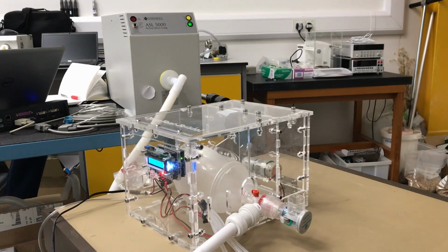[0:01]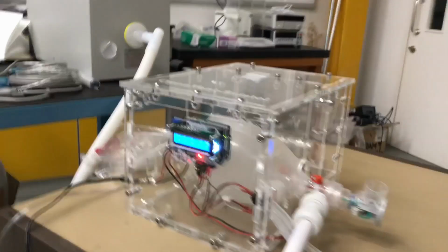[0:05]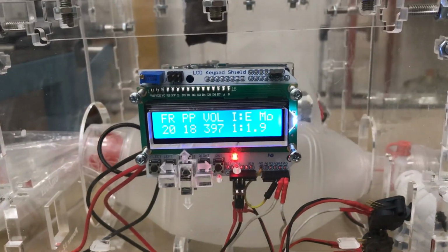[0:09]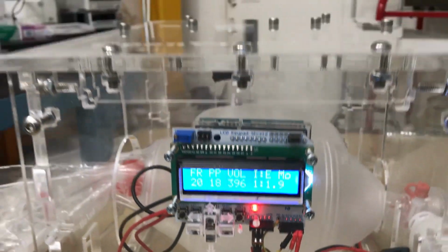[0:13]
Hi everyone, this video shows the testing of our device at the National Physical Laboratory in London under volume control ventilation mode, and you can see on the screen that we're delivering a pretty repeatable volume of 400 milliliters per breath, which is really good.
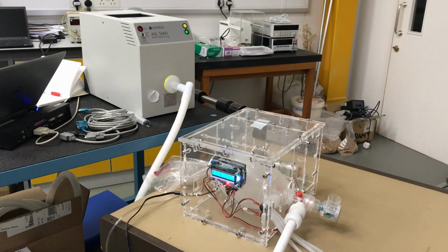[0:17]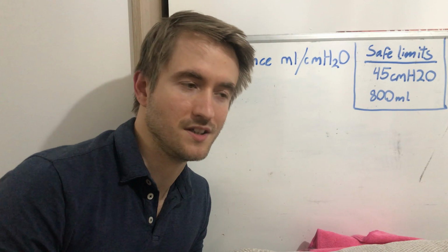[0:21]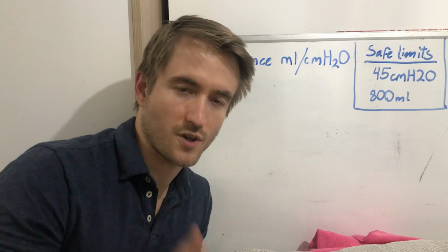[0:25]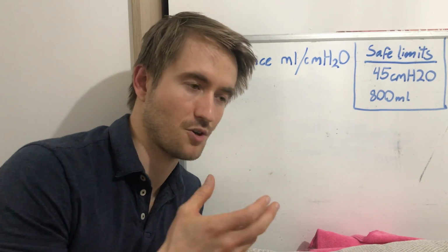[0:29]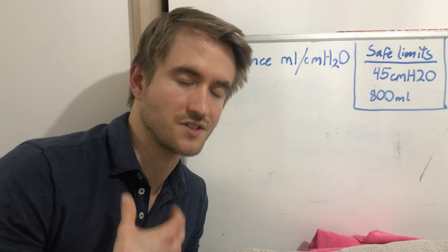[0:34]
We tested under different test conditions using their test lung as per the test table in the MHRA requirements. So the way the test lung works is you vary the compliance and resistance of the test lung to try to replicate the lung conditions of somebody suffering with COVID.
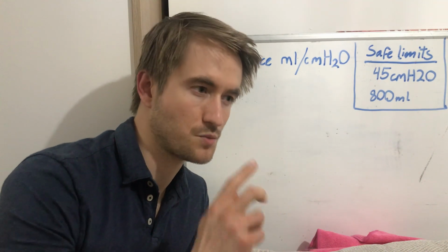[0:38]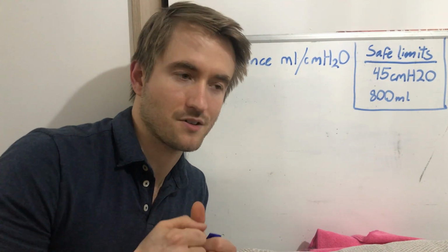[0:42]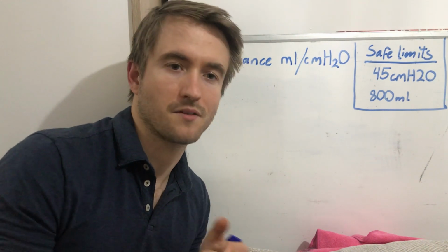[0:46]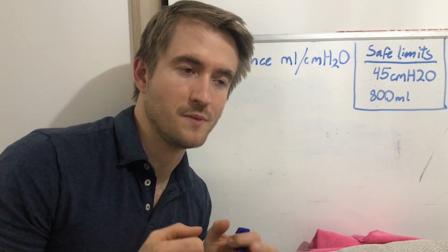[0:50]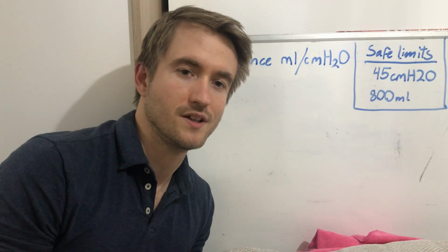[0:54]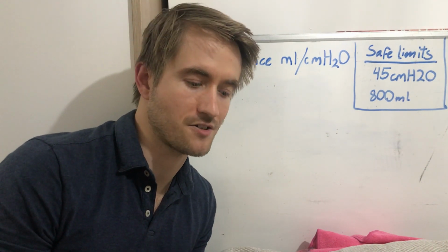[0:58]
So those two factors, one is compliance, which means the amount that the lungs can expand and contract. So a higher compliance value means they can expand and contract more. A lower compliance value means they really struggle to expand and contract. And the resistance value is how difficult or how easy it is for that expansion and contraction to happen.
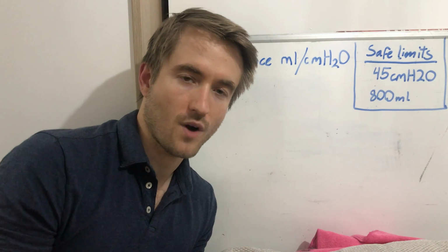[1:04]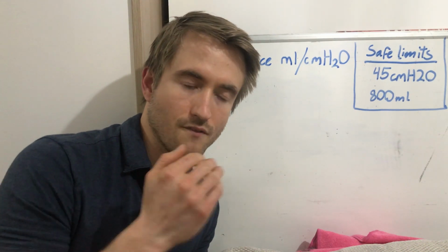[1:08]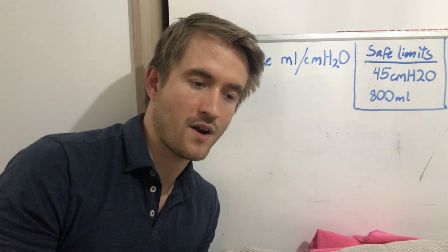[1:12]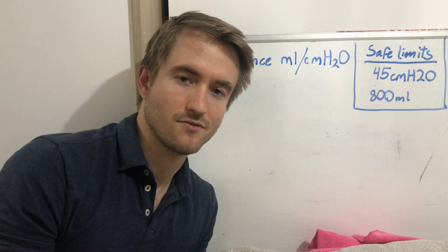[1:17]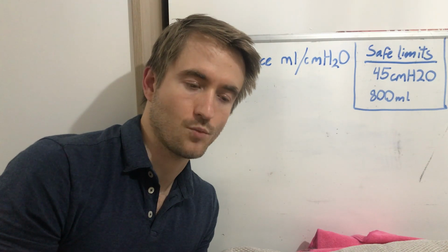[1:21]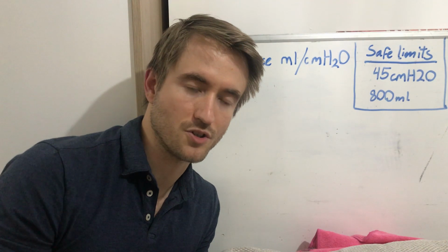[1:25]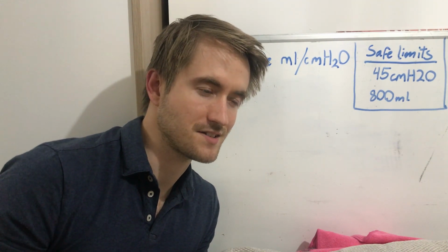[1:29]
As I was saying, our ventilator performs pretty well most of the time and delivered a consistent volume during the volume control ventilation mode. However, when we went to the further extremes of the compliance and the resistance values, it struggled and it wasn't able to perform as the test standard would show, but that's not necessarily a bad thing, and I'll explain.
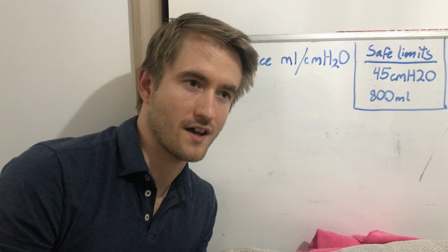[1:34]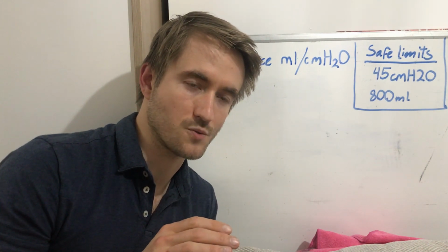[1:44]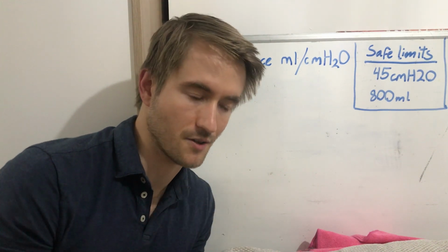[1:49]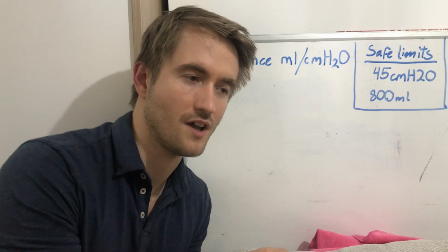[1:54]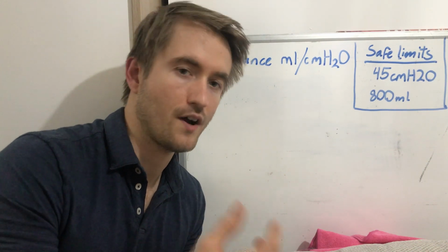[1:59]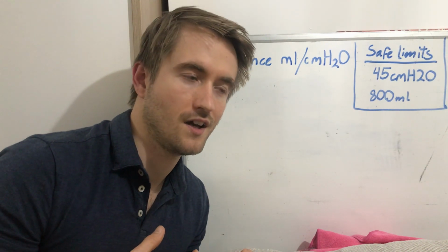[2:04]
So under those more extreme levels where the compliance is very low and the resistance is very high, as per the numbers in the table on the requirements document, if there was a ventilator which would successfully run those tests under those further extremes, it would actually produce an unsafe pressure level in order to do that. So they're asking for a volume of 500 milliliters of breath to be achieved with quite a low lung compliance, which means a very high pressure.
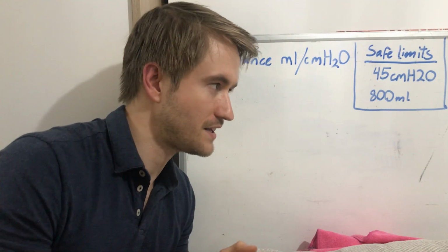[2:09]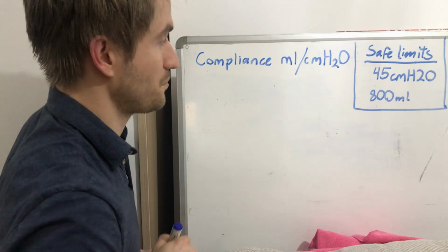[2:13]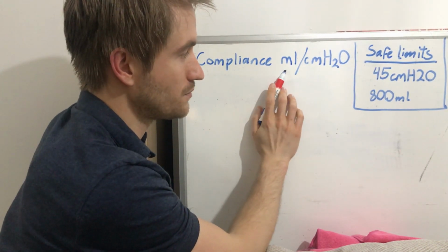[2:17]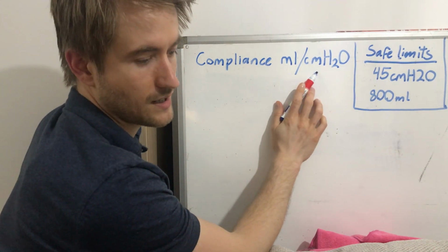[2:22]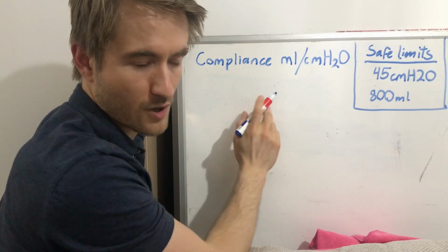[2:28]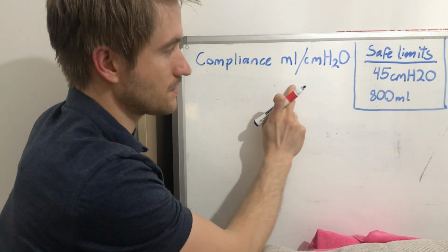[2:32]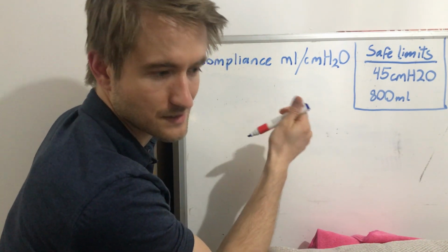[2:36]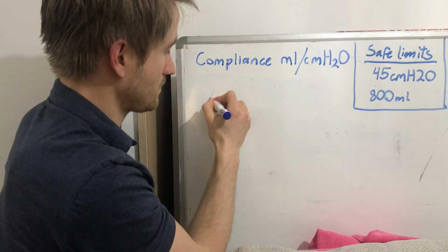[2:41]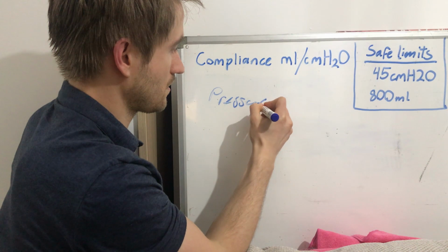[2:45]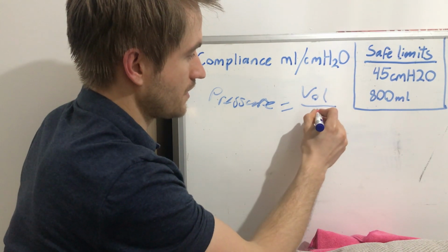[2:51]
So to try and explain that in a really simple way, although still with an equation, so sorry about that, the compliance is volume divided by pressure, so milliliters divided by centimeters of H2O. So if we rearrange that equation and try and work out what pressure you would need to achieve a test using 500 milliliters and a compliance of 10, rearrange that equation. So that's pressure is equal to the volume divided by C for compliance.
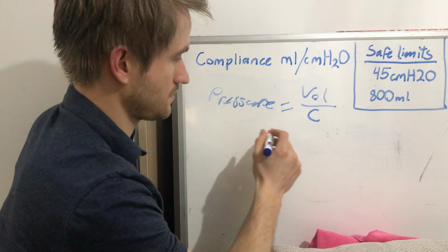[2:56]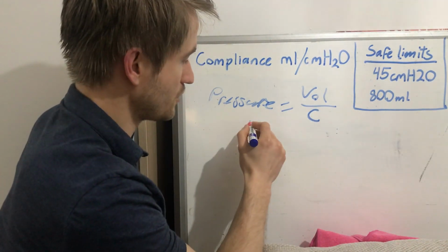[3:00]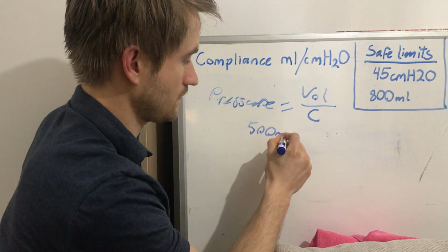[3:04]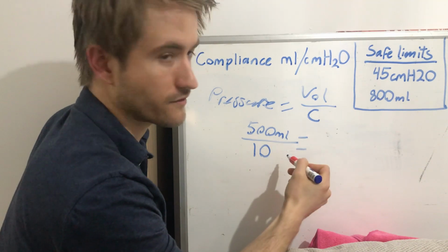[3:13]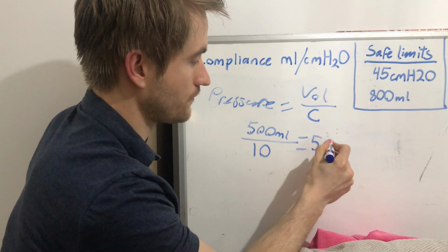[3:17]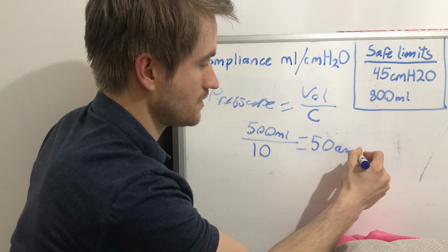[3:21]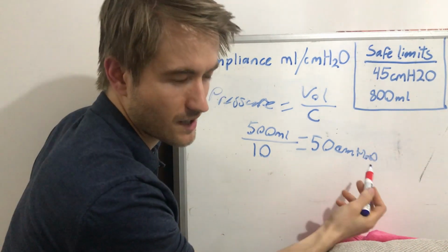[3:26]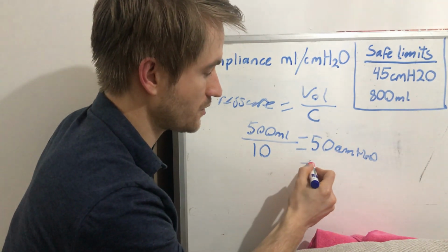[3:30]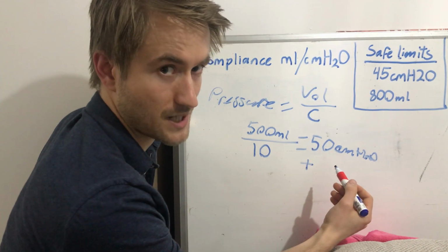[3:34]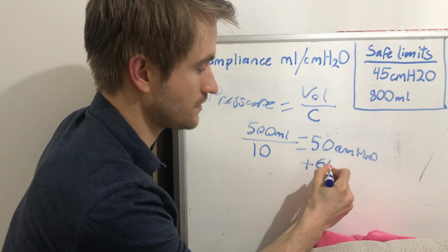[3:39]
So for us, in this extreme case on the test table, the volume was 500 milliliters, and the compliance was a value of 10. So divide one from the other. 500 divided by 10 is 50. So that's a value of 50 cm H2O. So 50 is a really high pressure value. Also remember that we have to add on to that PEEP, which in the highest instance in the table is a PEEP of 15. So that means a total pressure of 65 centimeters of H2O.
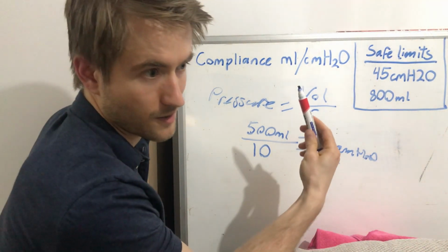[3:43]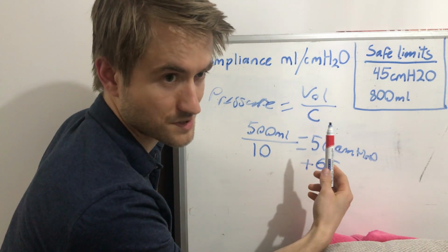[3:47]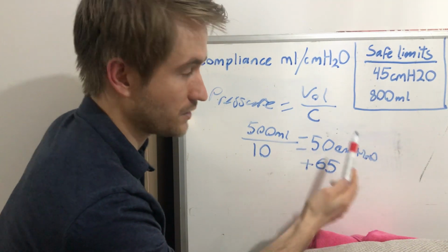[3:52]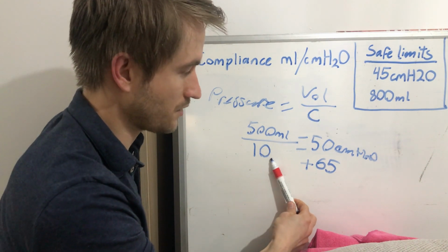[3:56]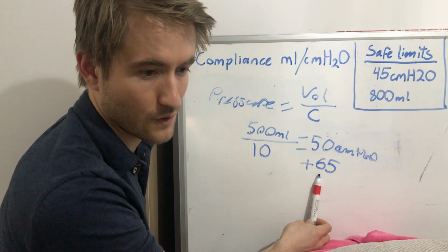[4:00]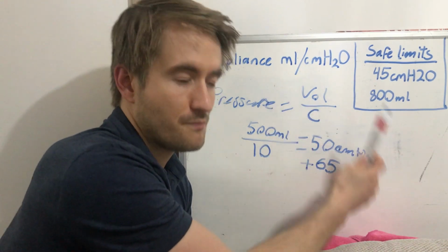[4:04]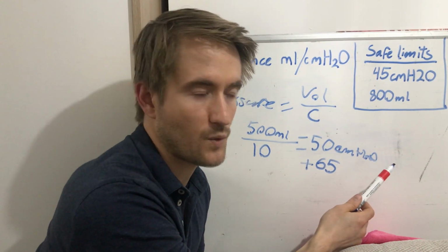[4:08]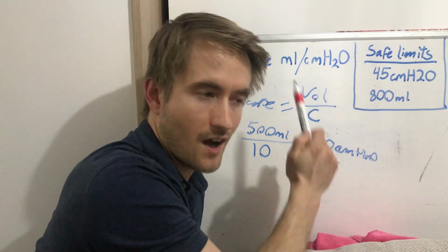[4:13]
So just to recap, if a device was to successfully meet that extreme test case, it would have to deliver 500 milliliters of volume with a lung compliance of 10, which means it would have to use a pressure of 65 centimeters of H2O. Based on the safe numbers that I've been given by the anaesthetist that we're working with, 45 centimeters of H2O is the upper safe limit.
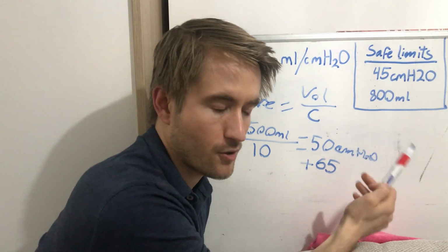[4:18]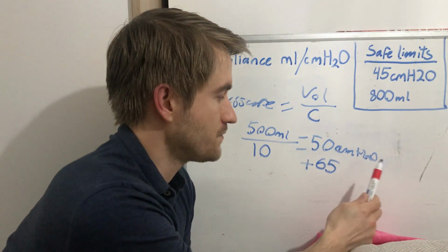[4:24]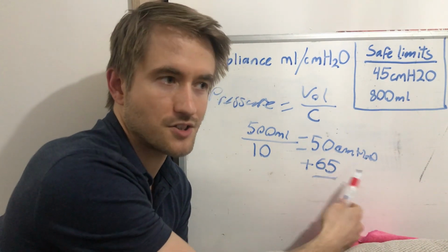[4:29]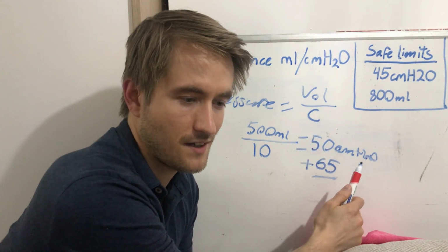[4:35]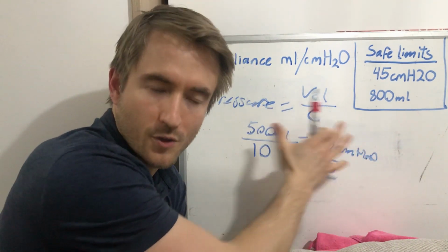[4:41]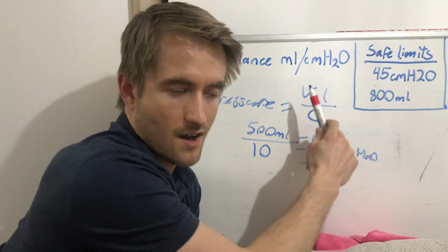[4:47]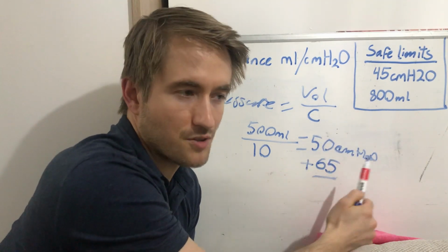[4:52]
If you go much beyond that, you could risk barotrauma, and barotrauma is a sort of damage to the lungs caused by overpressure. So 65 is a really high value of pressure, and that could certainly cause damage to the lungs. It's worth saying in the other test table, which is pressure control mode rather than volume control mode, which this is about, there is also an unsafe test state, which results in a volume of over a liter being deposited, which is over this safe limit as well.
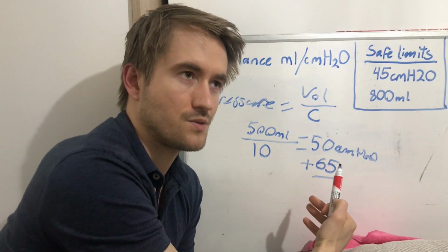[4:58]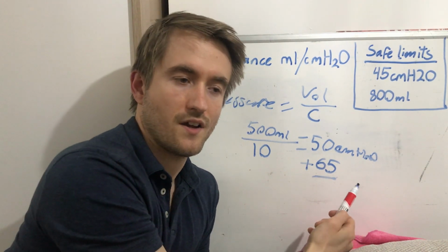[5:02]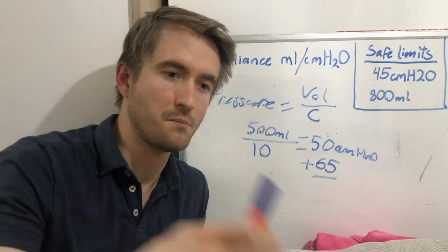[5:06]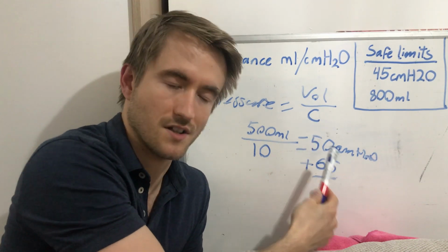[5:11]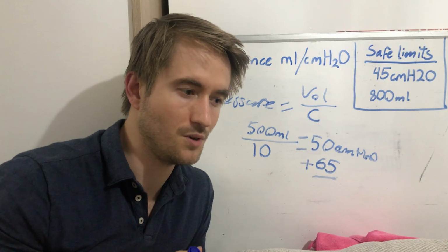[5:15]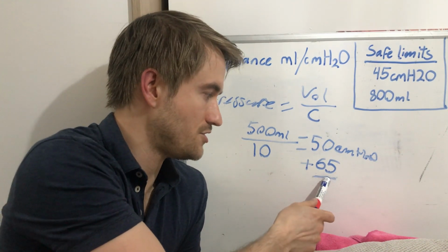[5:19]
So the question then is, where does that leave us? We're trying to design a system to meet the MHRA requirements, but one part of the requirements suggests 35 as a number that we shouldn't go over. But then if you go down into the test table, in order to satisfy those tests, you need to produce a pressure that's really high.
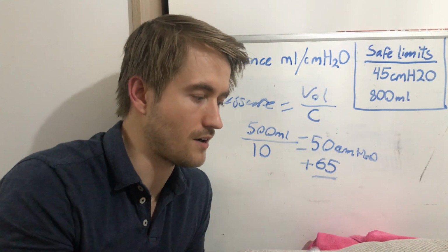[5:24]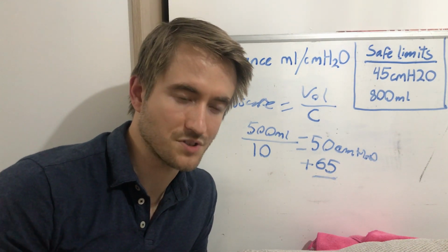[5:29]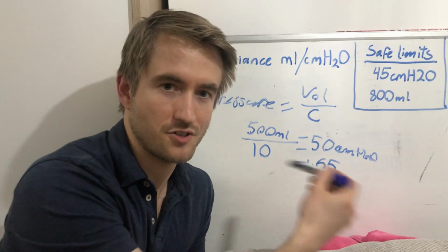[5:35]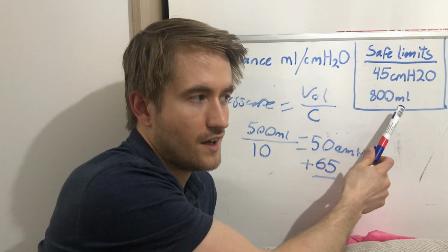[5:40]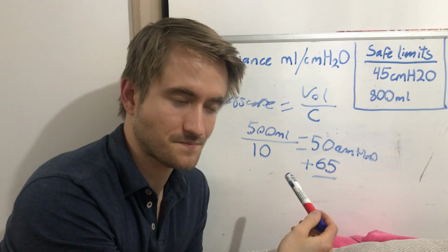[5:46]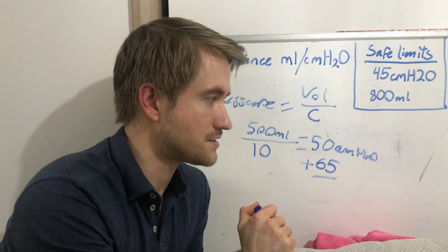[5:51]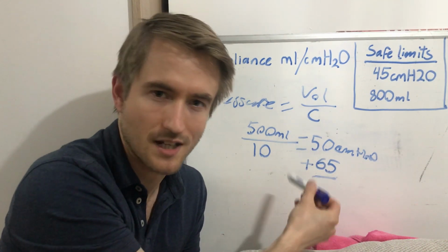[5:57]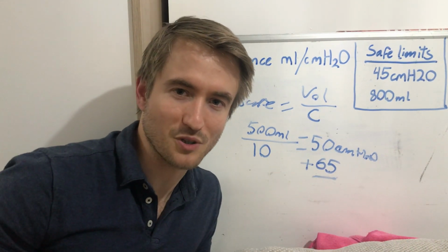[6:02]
So I'm thinking along the lines of maybe that test table wasn't as they intended. I don't want to design a system which is producing unsafe levels of pressure or volume. So I think for me, for now, it's best if we stick to 45 being the maximum which our device can achieve. I guess it's just a case of thinking maybe that test table needs looking at.